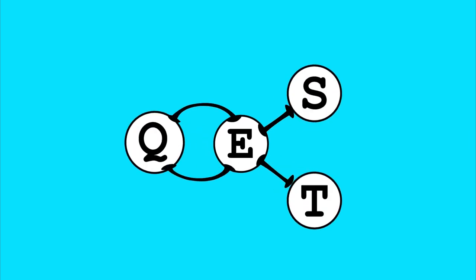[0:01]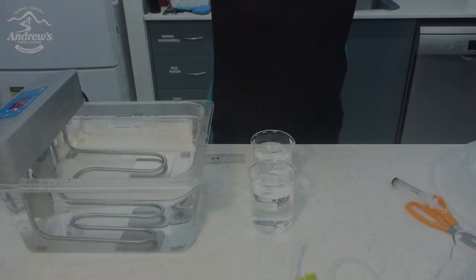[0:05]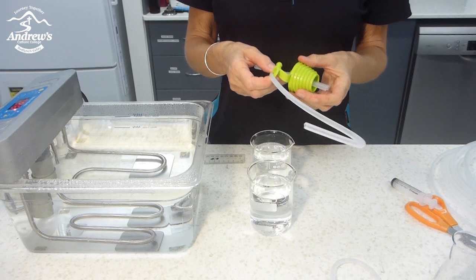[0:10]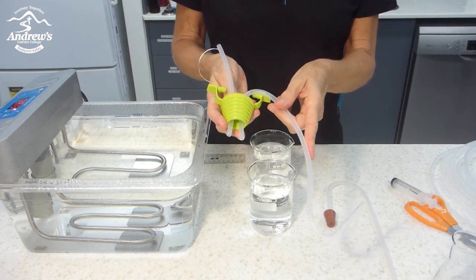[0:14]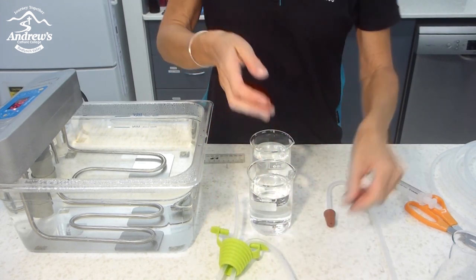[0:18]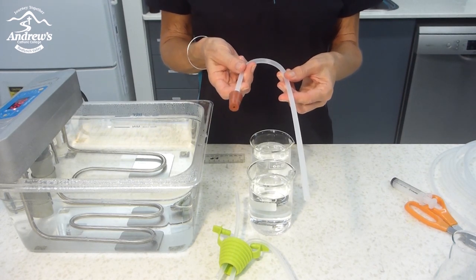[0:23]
I would like to show you how I replaced some of our glass tubing with EVA tubing. I made this one, which is for the gas collection in an upside down measuring cylinder. And I made this one, which is for the carbon dioxide test with lime water.
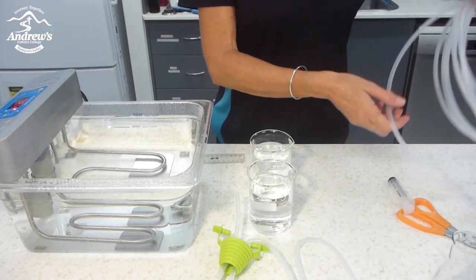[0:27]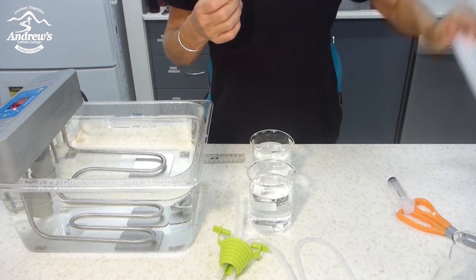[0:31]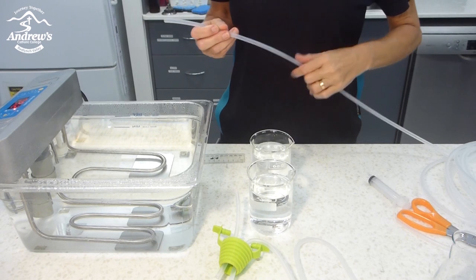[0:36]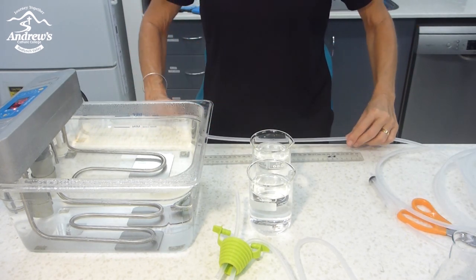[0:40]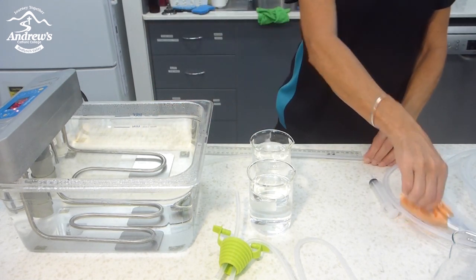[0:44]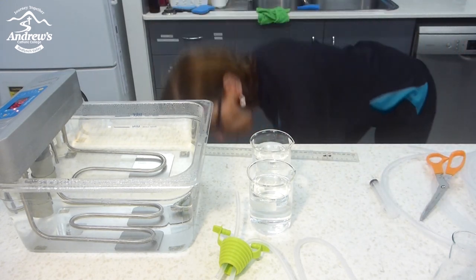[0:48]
Now here I've got a roll of EVA tubing. You can buy it from Haynes and Science Supply. I think West Lab does it too. It's about $30 to $35 for 10 meters. It's not cheap, but it's well worth it. It's soft, flexible tube. So I start off by cutting about 40 centimeters of tubing.
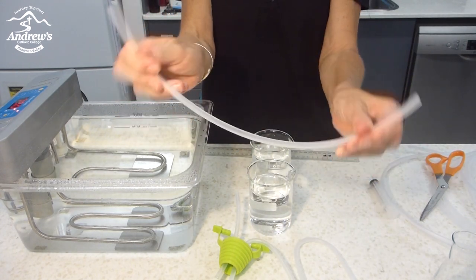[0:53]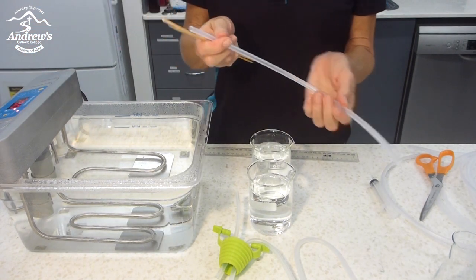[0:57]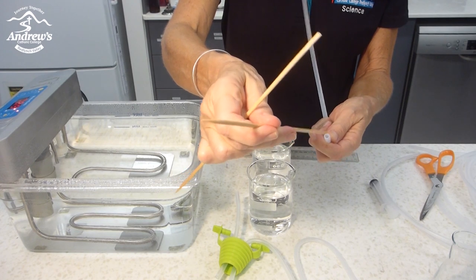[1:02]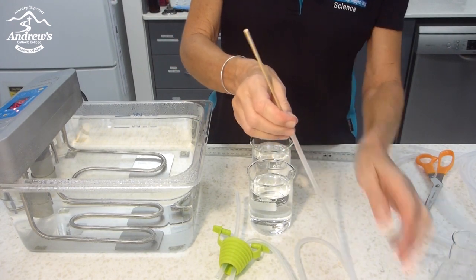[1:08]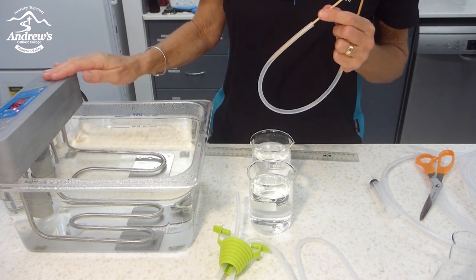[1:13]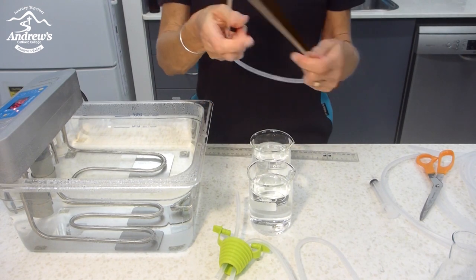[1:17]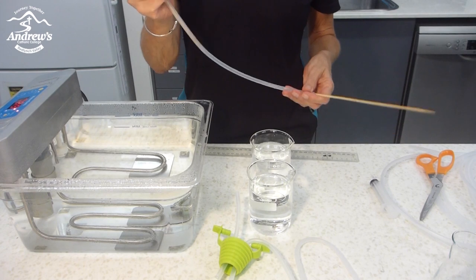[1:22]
You see, it's nice and flexible. And to be able to shape it, I need to first heat it to soften it. The easiest way to do that is insert skewers into the ends so I'm able to hold it in the hot water bath. I've got a hot water bath here, which is set to 80 degrees. It needs a minimum of 80 degrees. You could just boil a kettle and pour it into an ice cream container. It will do the same job.
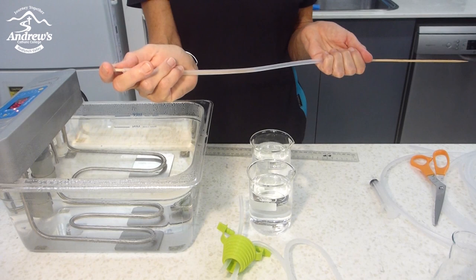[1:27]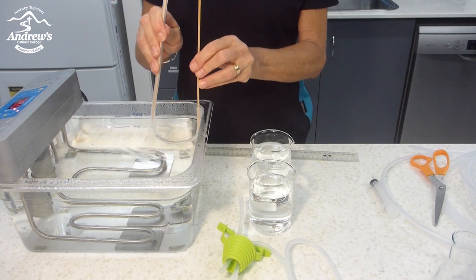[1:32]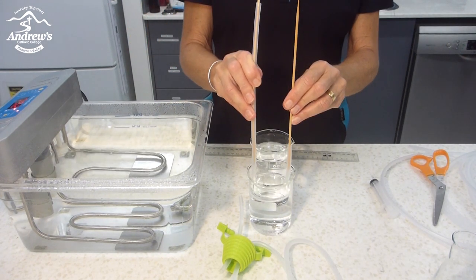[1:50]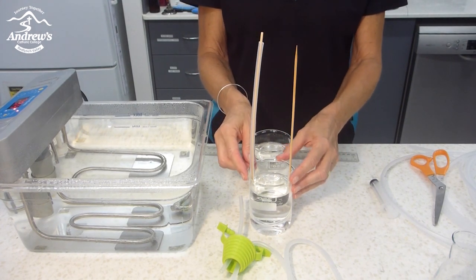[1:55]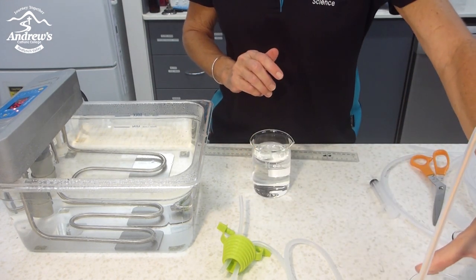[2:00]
So I'm going to make this one first. I will have one long one and one short one. I'm going to insert it into the hot water bath, and after a little while you can feel how the plastic goes softer and softer, and you can shape it. Once it's soft and in the right shape, I transfer it into cold water. Just tap water will do. I use a beaker because here I can just leave it sitting like that and don't have to hold on to it, and I put it aside.
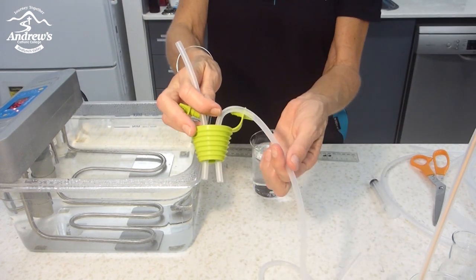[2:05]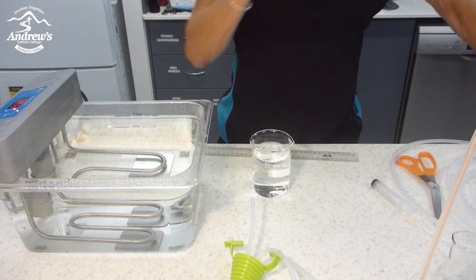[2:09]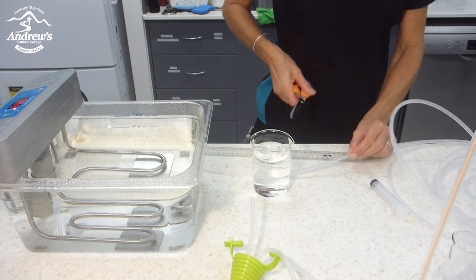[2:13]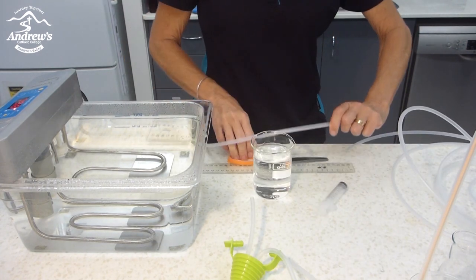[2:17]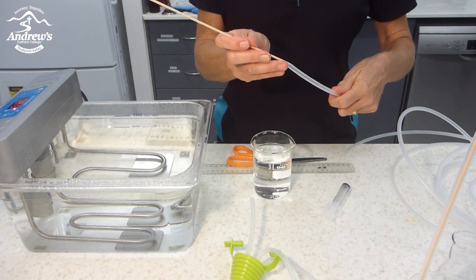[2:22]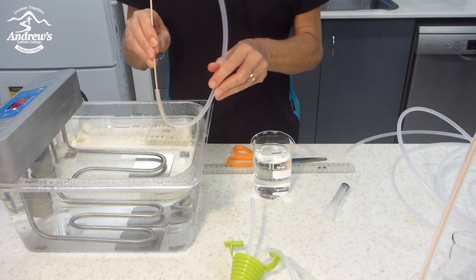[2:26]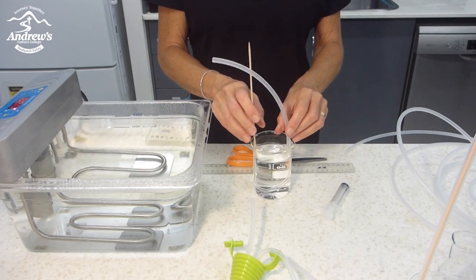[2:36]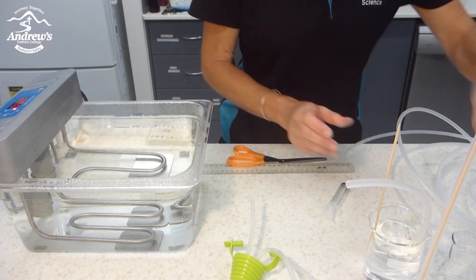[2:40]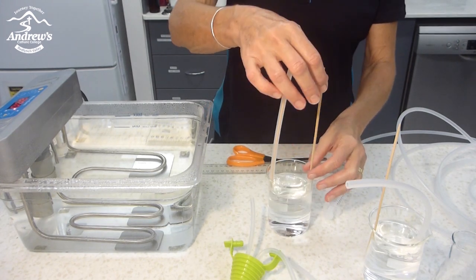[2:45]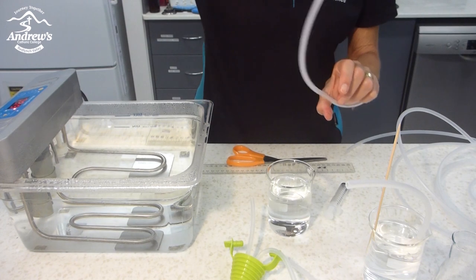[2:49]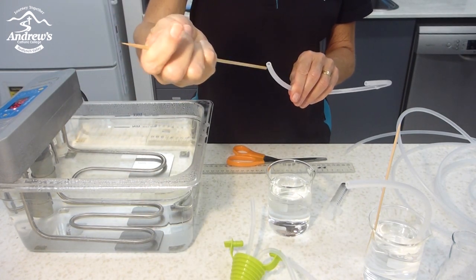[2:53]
Now I'm going to make the S-shaped part for this one. Same thing, I'm going to use about 40 centimeters of tubing. Okay, this time I'm just going to put one skewer in to make the first part of the S bend. Put it in. Wait for it to go soft, and then put it in a beaker, and I leave this one. And hopefully, this one has cooled down now. I'll take the skewers out. That's it. Actually, I can straighten this one. I'll show you how to straighten that part.
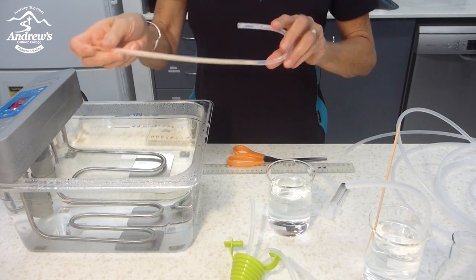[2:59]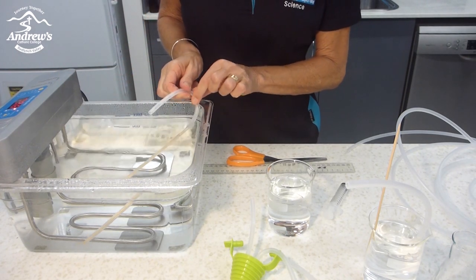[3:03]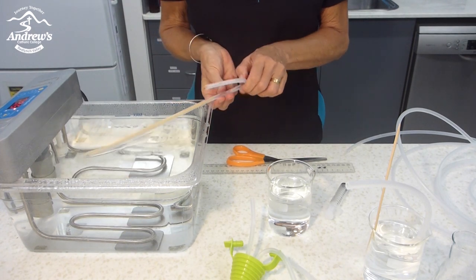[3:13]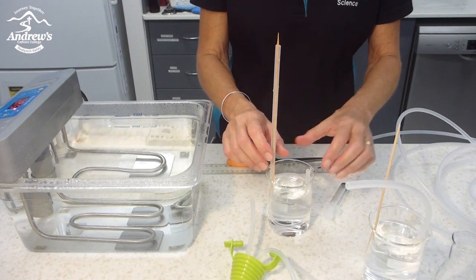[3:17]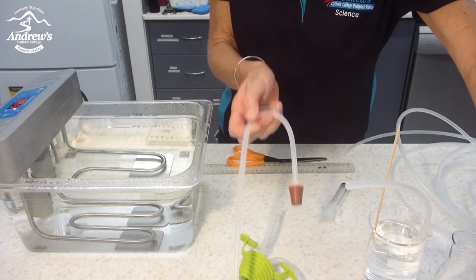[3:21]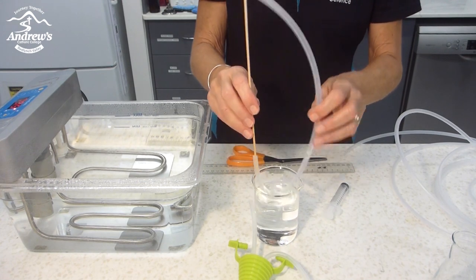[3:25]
I'll put a skewer in. Going to hold this part in the hot water bath. It's curved because it was on a roll, so it's just for looks. It doesn't have to be straight because the tubing is flexible. I'll put this one back for the time being and let it cool again. I should get a nice straight one like this. Okay, this one hopefully has cooled in.
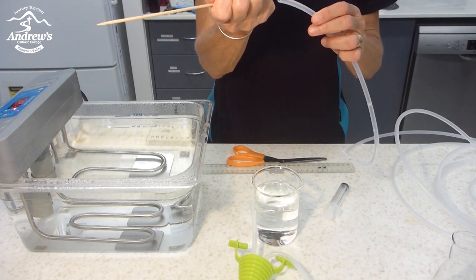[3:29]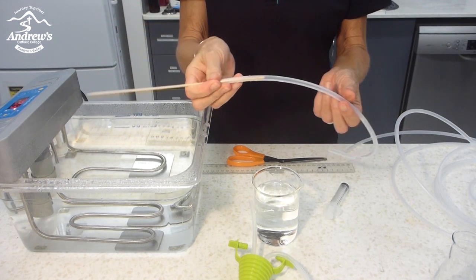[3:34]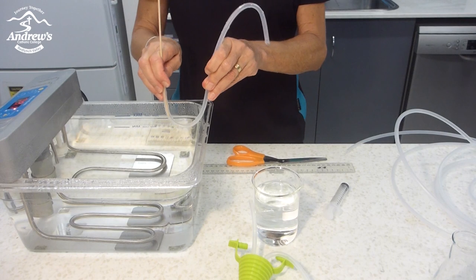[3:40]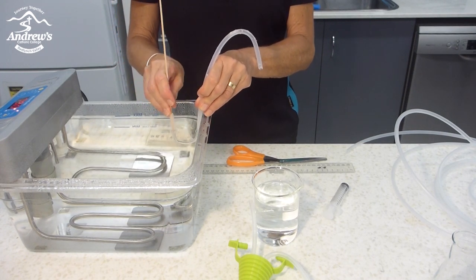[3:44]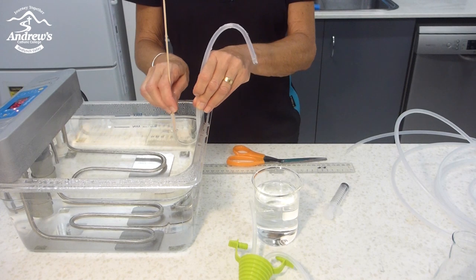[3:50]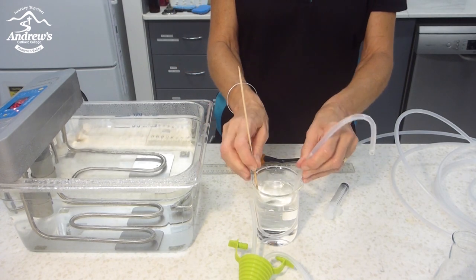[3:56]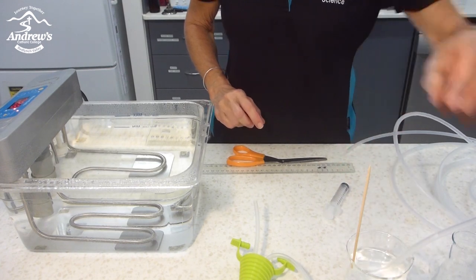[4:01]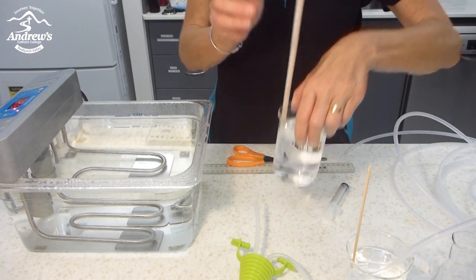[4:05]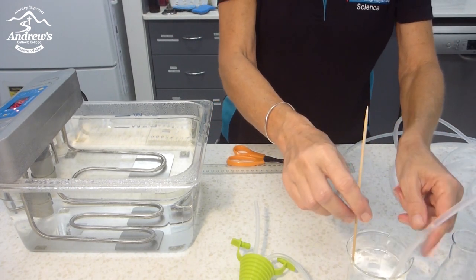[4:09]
I'm going to put the other part of the S in. Put a skewer in, it's a little bit harder to turn it against that natural bend it had from the roll. Place it into the water bath, wait for it to go soft. Once it's soft and it's got the right shape, I put it in the beaker and I wait for it to cool down. I'll come back to this one. That's still warm. Can't take that out yet. I will take this one out instead.
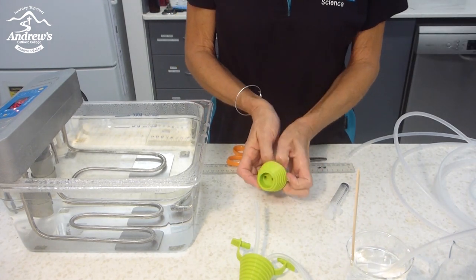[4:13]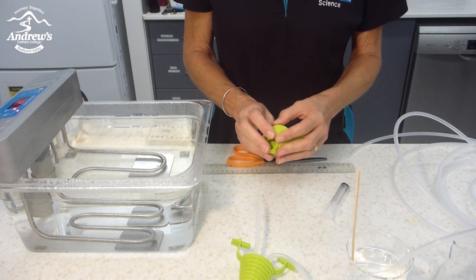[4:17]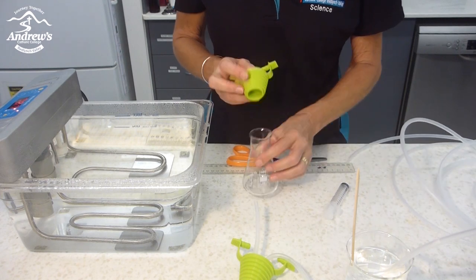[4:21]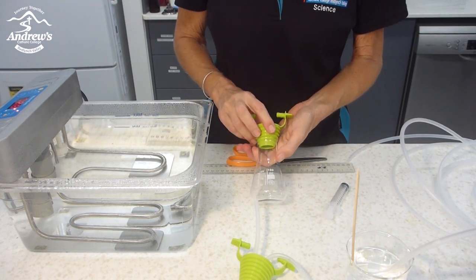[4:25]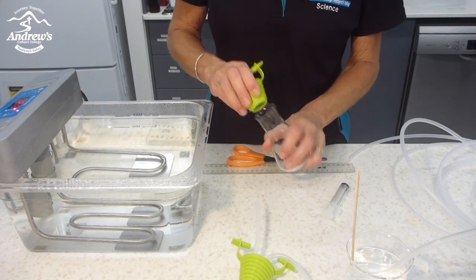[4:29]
I've got these stoppers. These stoppers came from Westland. I do love those stoppers. However, they don't fit all flasks. I've got these Simax ones and they seem to fit quite well. But I had a Schott Duran flask and it kept slipping out. So make sure it fits your flasks.
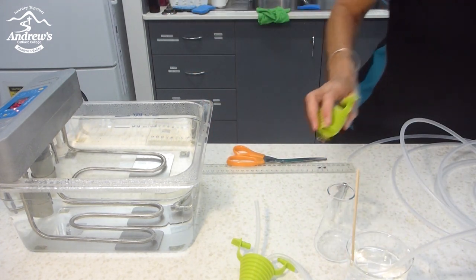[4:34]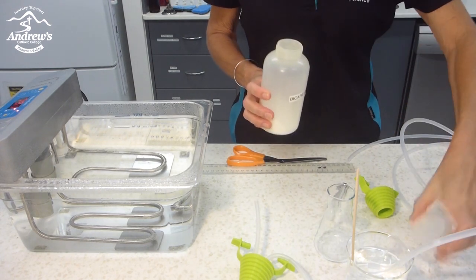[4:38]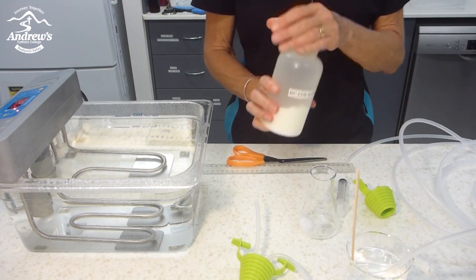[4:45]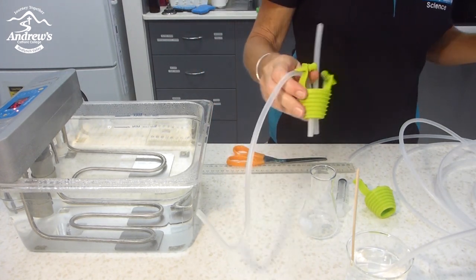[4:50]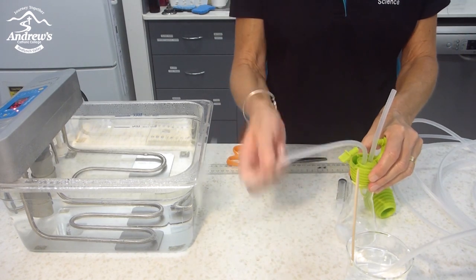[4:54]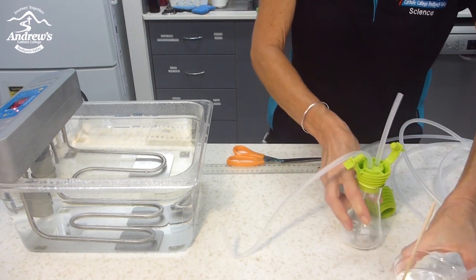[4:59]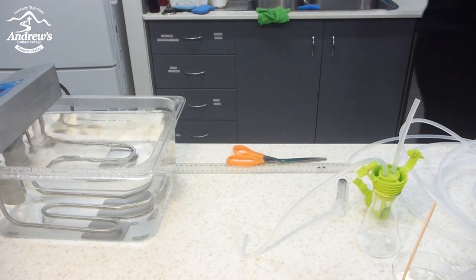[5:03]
I'll show you how it's been used. I put a little bit of sodium bicarbonate in the flask. Put the stopper on. You see the tubing, because it's not glass, it can't get broken, and you can easily adjust it to whatever you're going to use it for.
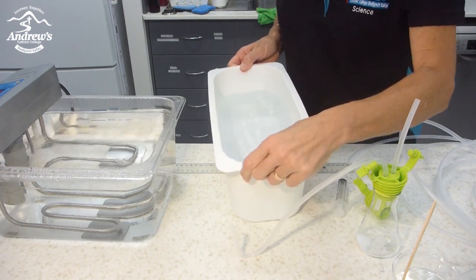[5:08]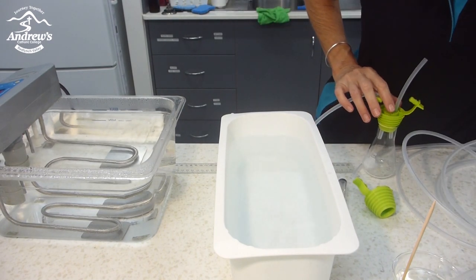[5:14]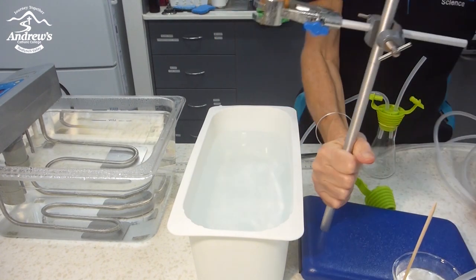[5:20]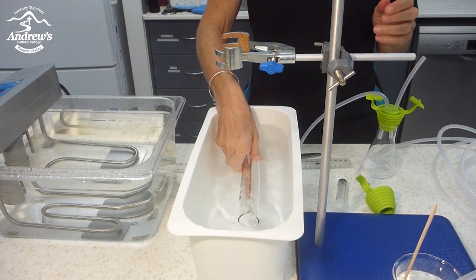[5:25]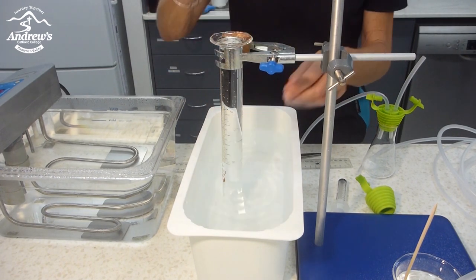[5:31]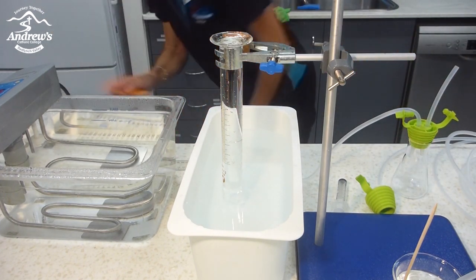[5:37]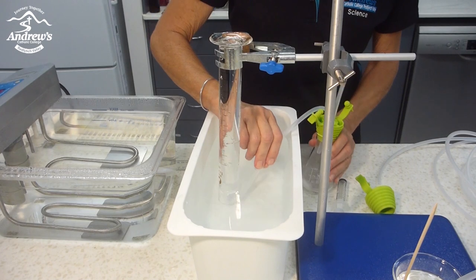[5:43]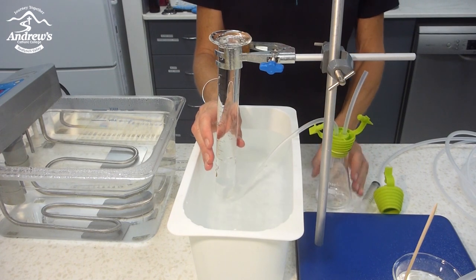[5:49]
What about for the measuring cylinder? A retort stand to hold the measuring cylinder. I'm going to fill the measuring cylinder with water. I already adjusted that so it sits nicely. It's easy to put that tubing into the measuring cylinder. Again, because it's not glass, you can adjust it easily because it's flexible.
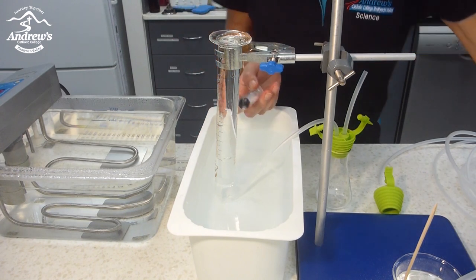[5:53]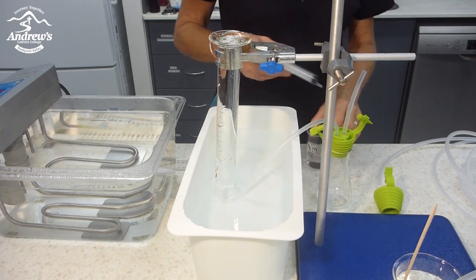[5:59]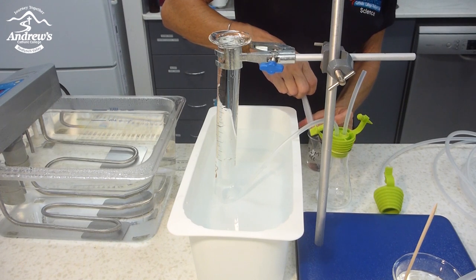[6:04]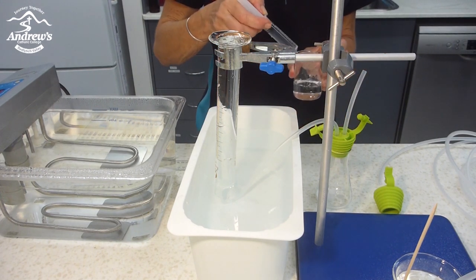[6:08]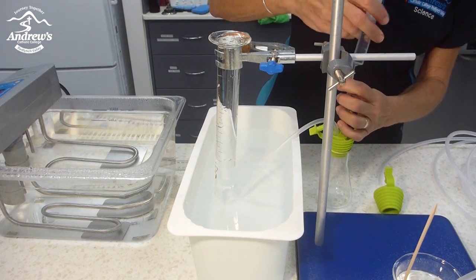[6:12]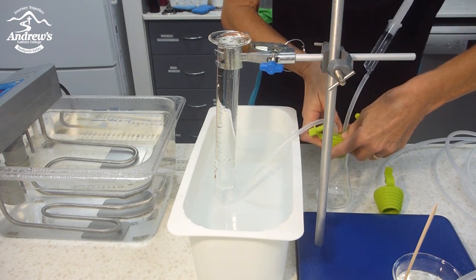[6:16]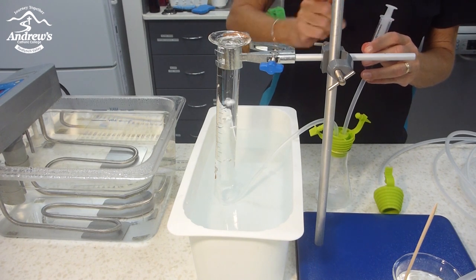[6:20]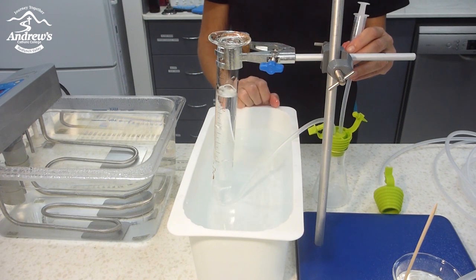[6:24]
Now with the syringe, you see the fitting, it fits quite easily into the EVA tubing. I'm gonna suck up 10 milliliters of 0.2 molar hydrochloric acid. Place it in the tip, make sure one more time it's tight, and then just add the acid. You see the bubbles form and the gas is collected in here. So I've collected about 35 milliliters of gas. In reality it's only 25 because I added 10 mil of liquid.
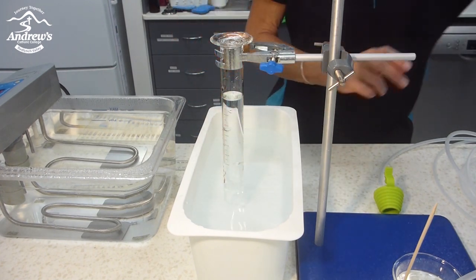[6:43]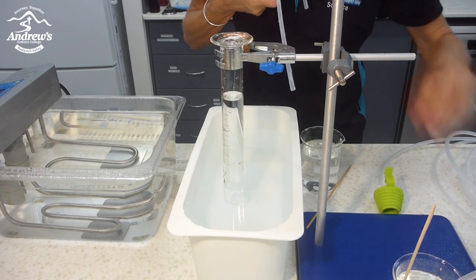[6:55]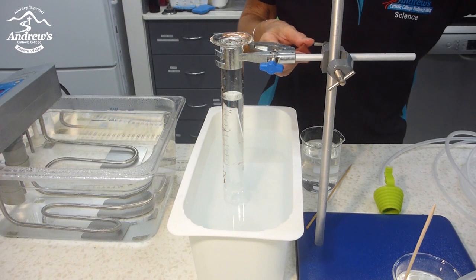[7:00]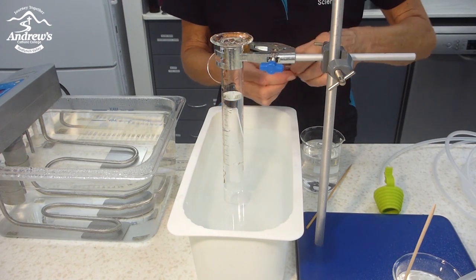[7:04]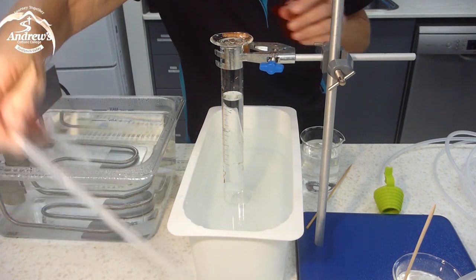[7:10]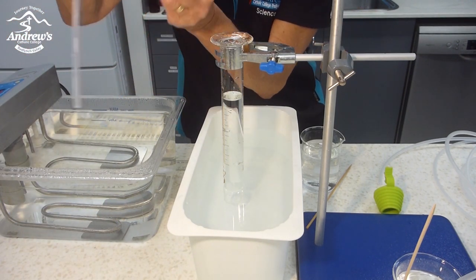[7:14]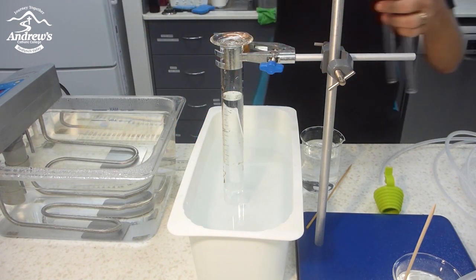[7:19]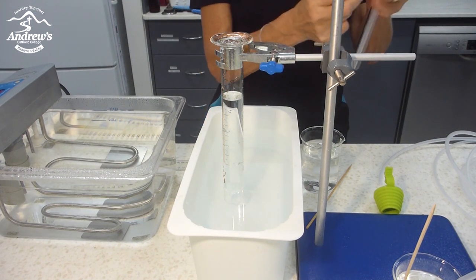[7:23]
That one. Hopefully this one. Yeah, it's still warm. That'll be alright. But it's a lot straighter than it used to be. And I've got these little stoppers. They fit on the test tubes. I've got these little luer fittings that will go onto the little test tube. Push it in. Again, these ones fit really well. Push it in, and then set it up to collect your carbon dioxide.
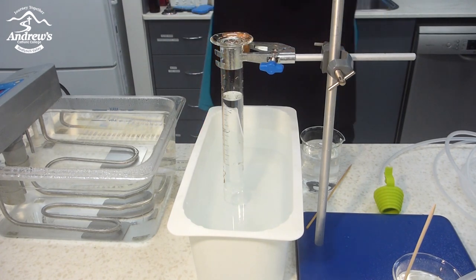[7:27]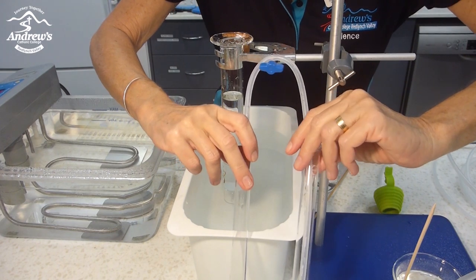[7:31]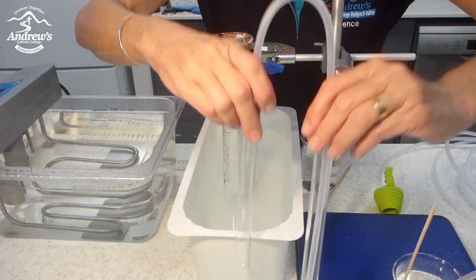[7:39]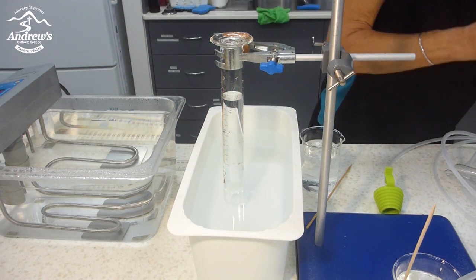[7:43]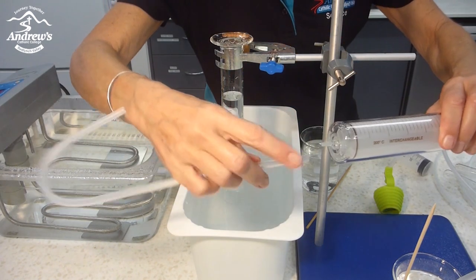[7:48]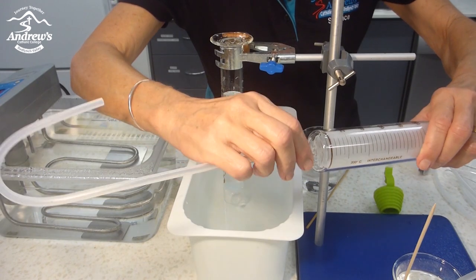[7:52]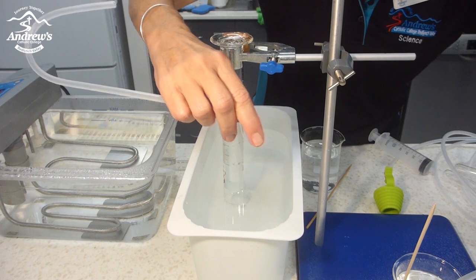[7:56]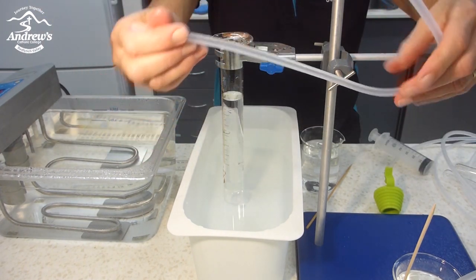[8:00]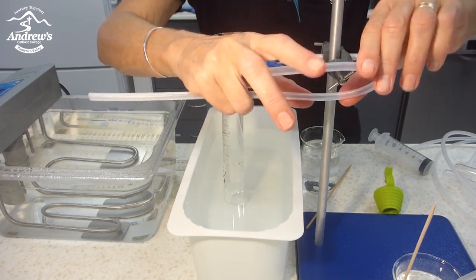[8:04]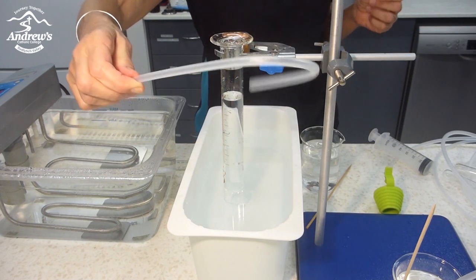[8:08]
So say you've got marble chips and hydrochloric acid in here, and in here you would have lime water, and you bubble the carbon dioxide through the lime water, and the lime water will go cloudy. You can fit gas syringes onto the EVA tubing. It's got the same fitting, just very easily slides on. So it's very, very versatile, very easy to use, no risk of any breakages, and these ones, they will last for years. If necessary, you can always reheat them and bend them again if they lose shape, but I found they lasted for 2 years without losing their shape.